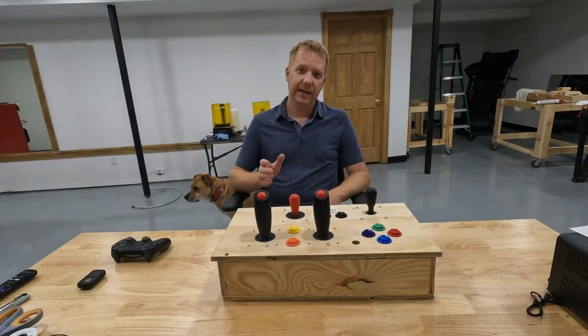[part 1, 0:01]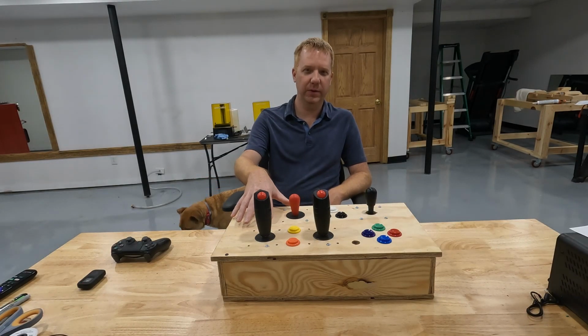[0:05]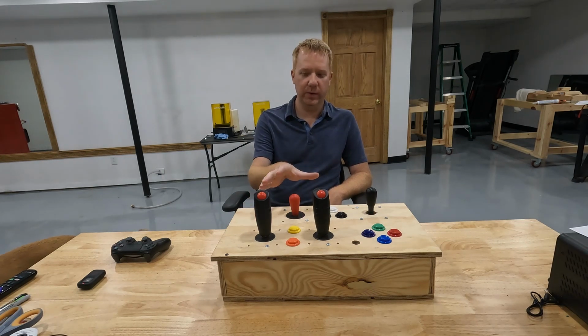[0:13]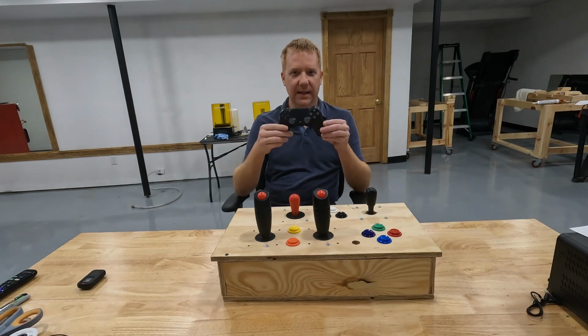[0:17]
Now in some of my other videos, I showed all of you how I built a PlayStation controller for my quadriplegic nephew. So what you see in front of me is what we built in those videos. It's a wooden box with joysticks and buttons on it, and it does the exact same thing as a DualShock PlayStation controller.
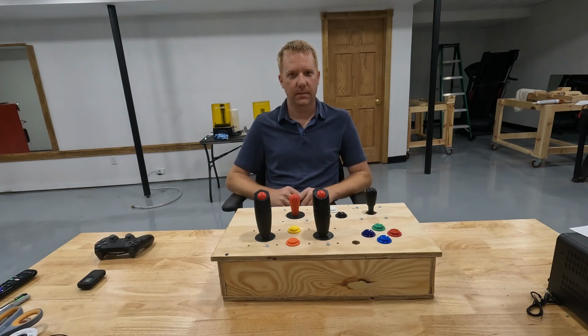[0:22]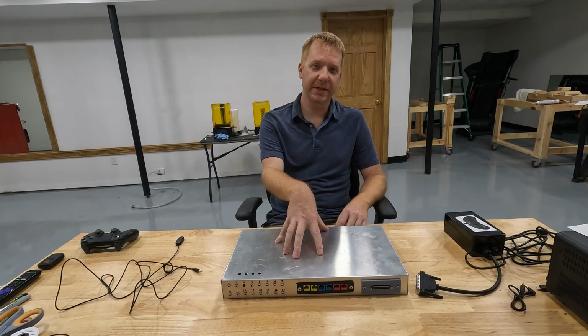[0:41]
Now in those videos, I had mentioned a few times that I was working on a completely different design that's more flexible, a little bit more modular than this controller. And I'm excited to show that to you today. So let me get it out and we'll see what it looks like. Right here is the new and improved modular controller that I've been working on.
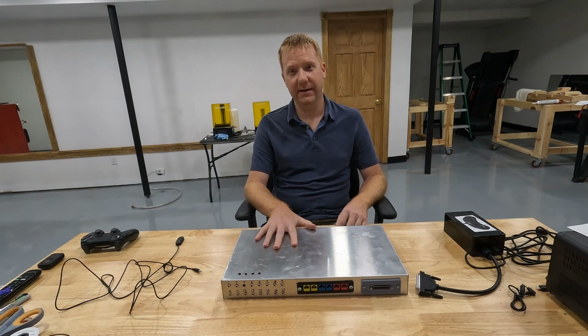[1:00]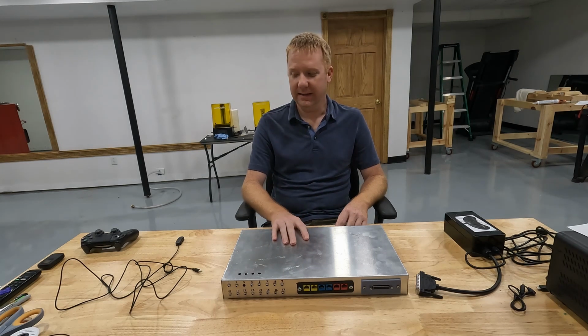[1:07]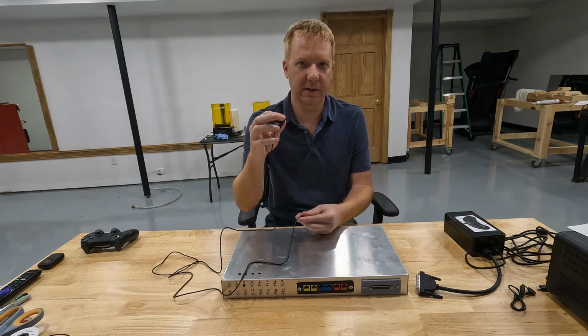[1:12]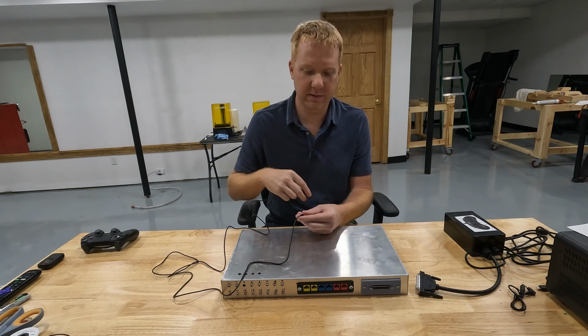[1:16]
So instead of having buttons and switches and joysticks permanently mounted to a box, what I've done is made the entire thing flexible so that we can plug in any kind of button or switch or joystick into this thing and use it as we need it. So for example, I have a simple switch here. This is just an on and off switch, similar to the arcade button that we used in our previous controller.
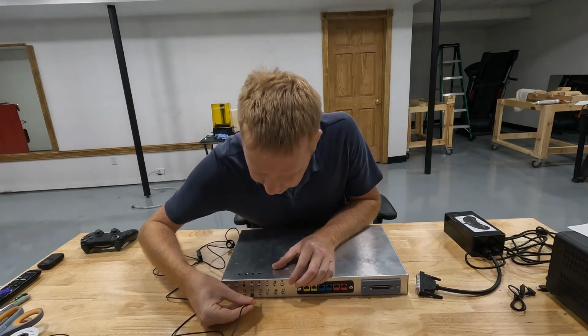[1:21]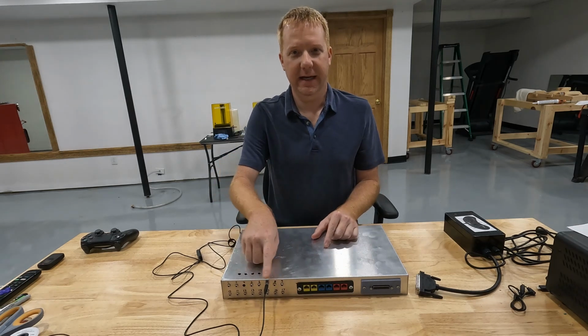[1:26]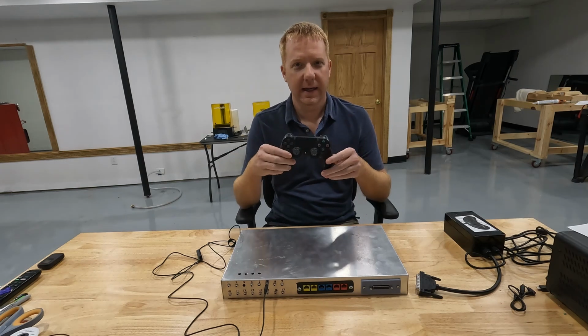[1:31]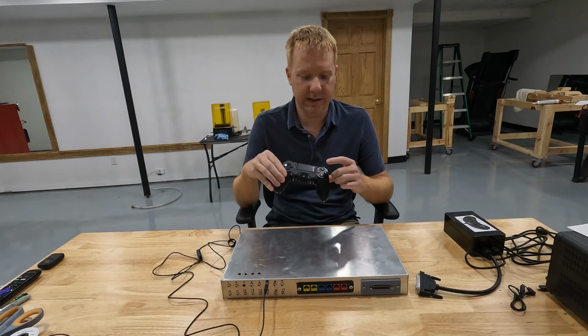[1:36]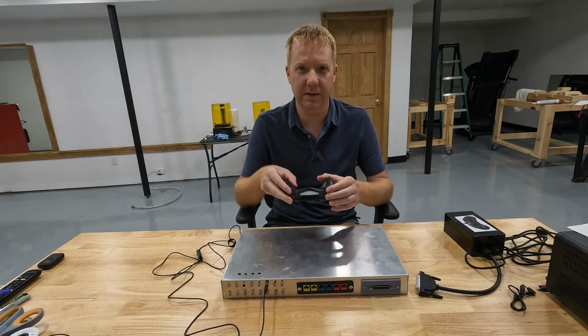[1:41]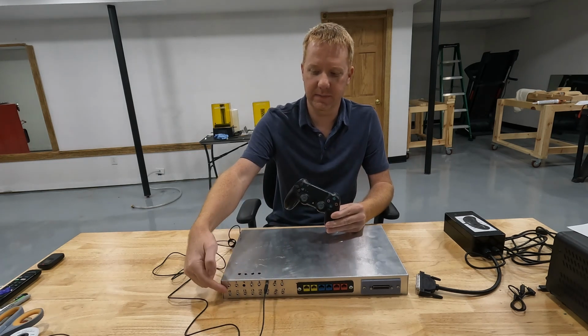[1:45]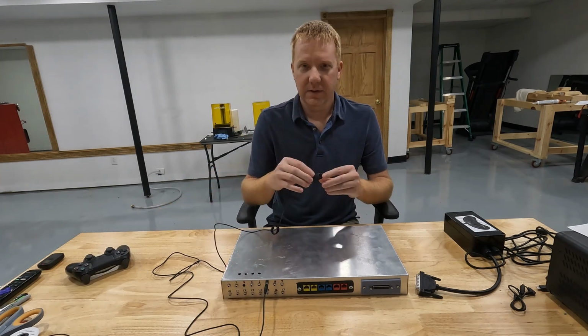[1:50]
And it's going to plug into one of these 3.5mm jacks. Now each one of these 3.5mm jacks corresponds to a button on a controller. So for example, it could be X, square, triangle, circle, or it may be the directional pad or the L1, L2, R2, R1 buttons. Anything on the controller, we have those as 3.5mm sockets. So I can use any type of switch to control any type of button.
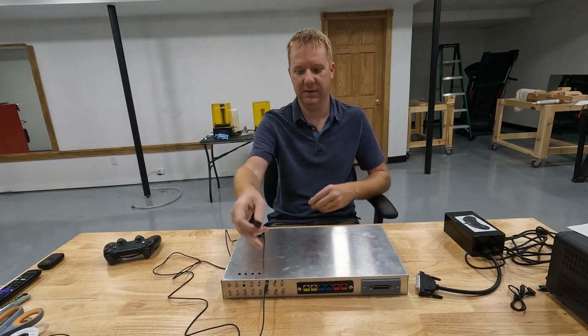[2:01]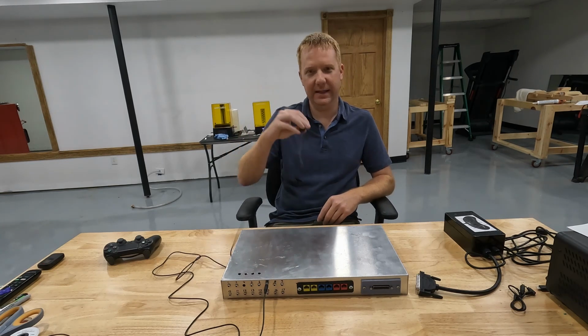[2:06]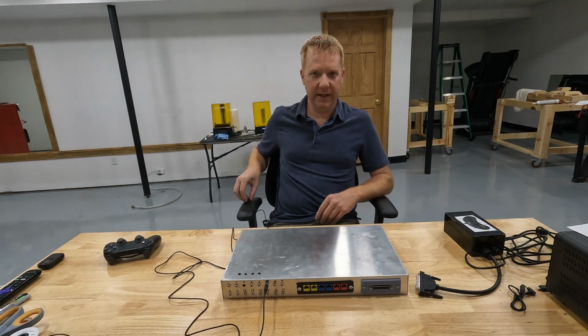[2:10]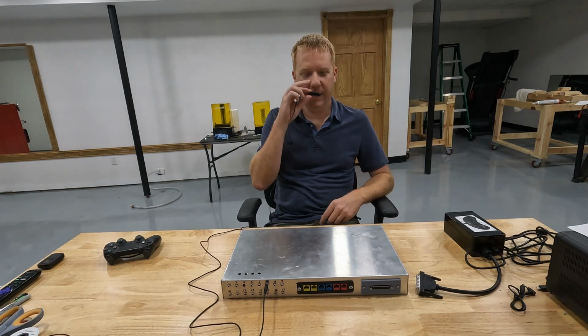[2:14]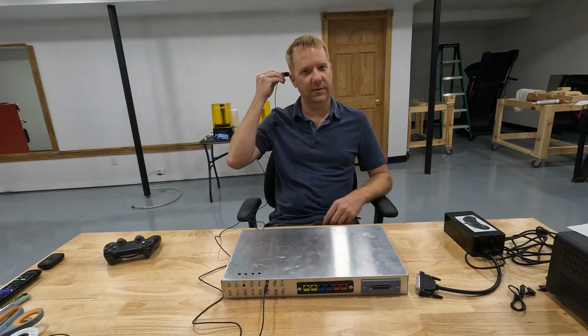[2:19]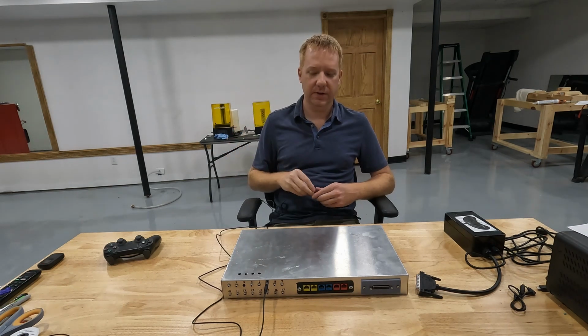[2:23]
So if I wanted to use this switch for the X button on a PlayStation controller, for example, then I can plug it into the X button jack and then I can mount it anywhere I want to. So I could have it mounted to my wheelchair armrest and maybe use my elbow to control it. I could put it in my mouth and bite on it if I wanted to, or maybe up by my head so I could use my head to activate this switch.
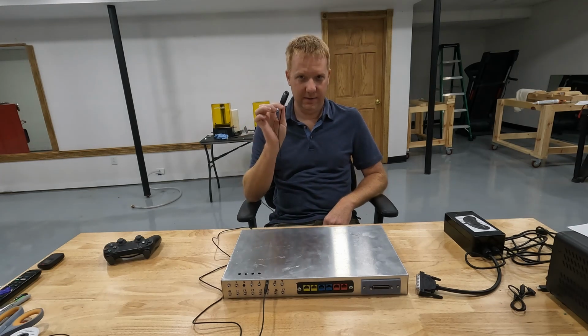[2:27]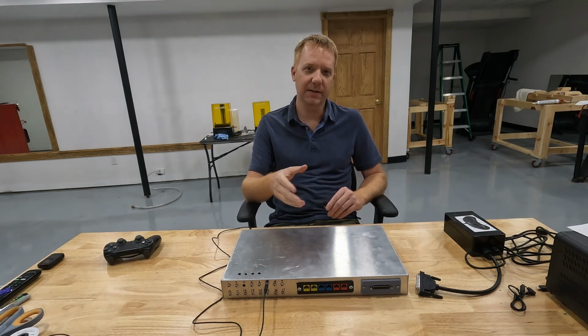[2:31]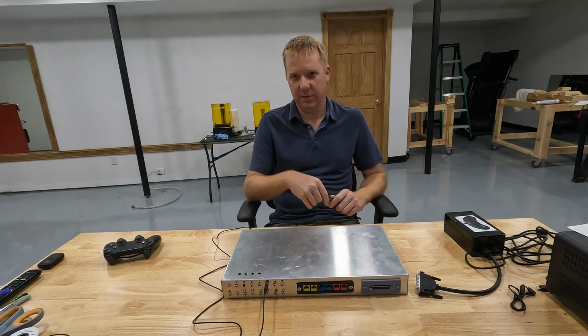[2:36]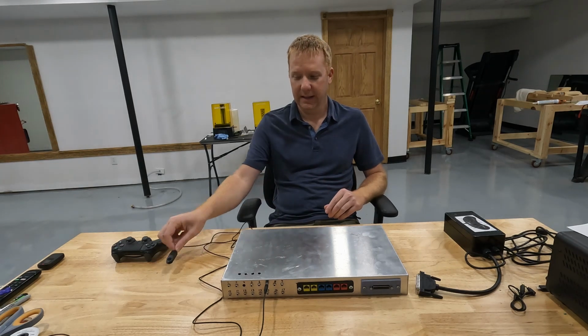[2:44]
Now, we're not only limited to joysticks and simple button switches like this. We could also use more complex things like a sip-puff device, or we could come up with our own types of switch. You're really only limited to your imagination, so you can expand this to whatever you want to suit your needs.
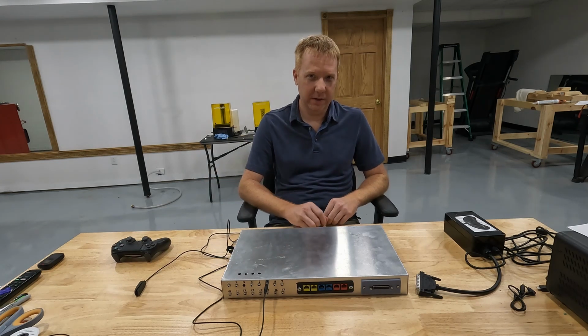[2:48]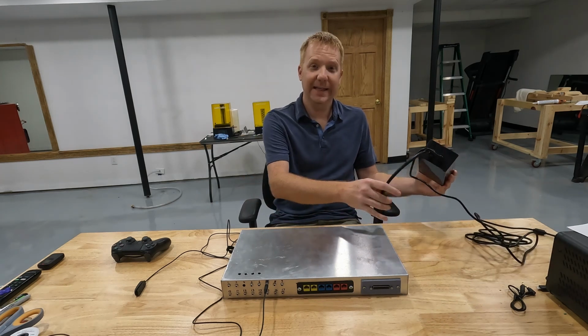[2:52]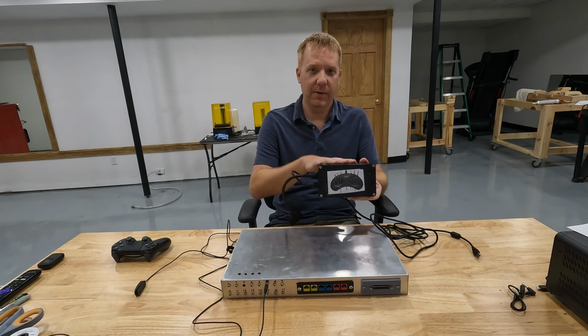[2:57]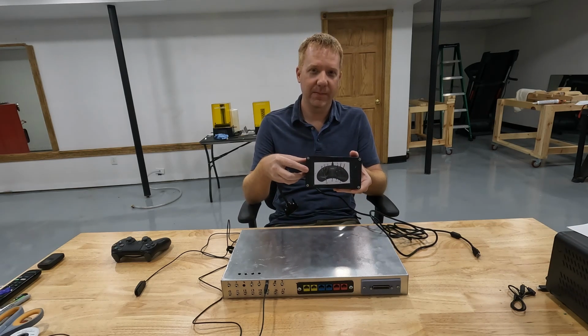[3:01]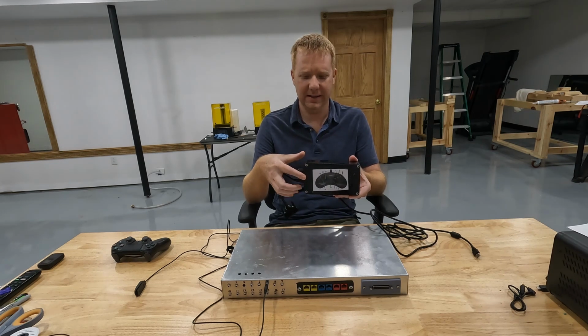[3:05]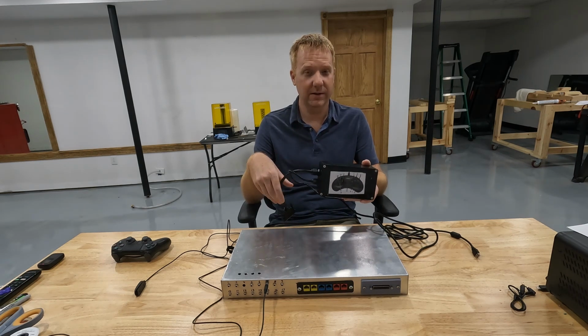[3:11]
Now, the other cool thing about this controller is I have made it to where we can use it with any system. So what I have done is I've created a module. And this module I built for the Sega Genesis Mini, or the Sega Genesis Classic Mini might be what it's called, but it's one of the mini systems. I know they made one for Super Nintendo and regular Nintendo. This is the Sega Genesis version.
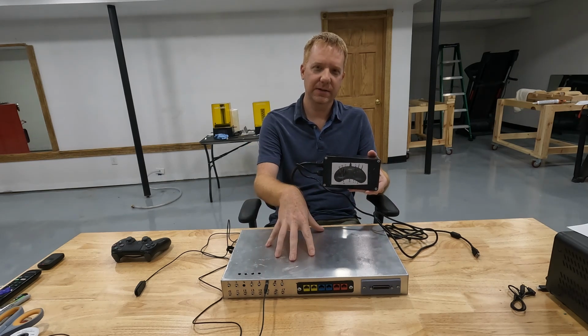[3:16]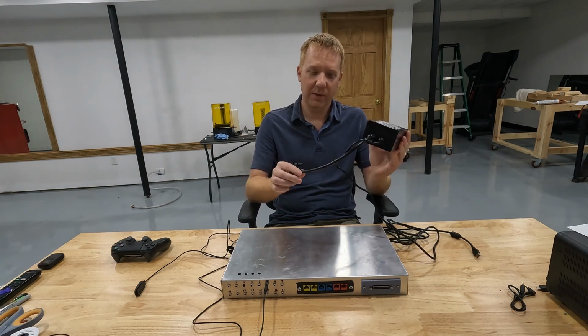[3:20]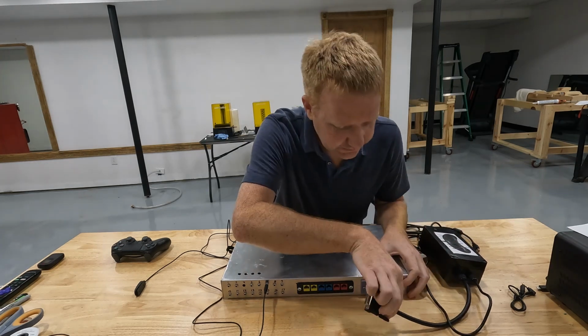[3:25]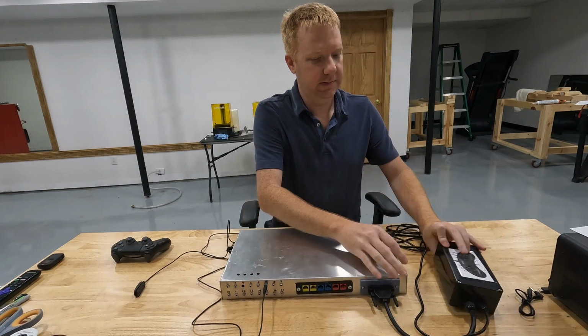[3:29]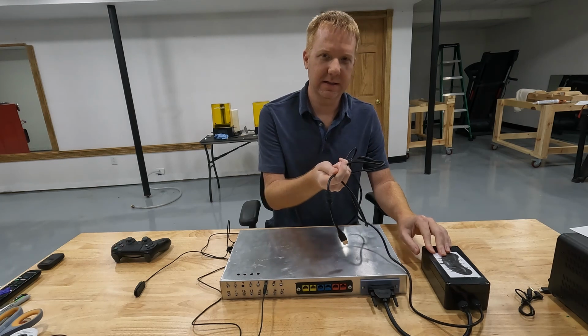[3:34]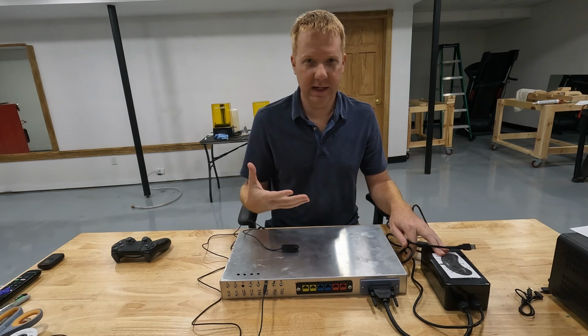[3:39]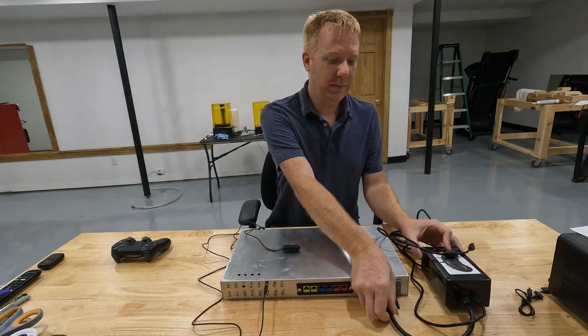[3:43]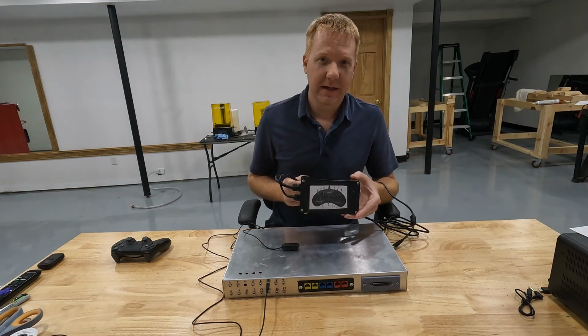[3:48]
So if I wanted to use this controller for a Sega Genesis Mini, for example, I can plug this module into this connector right here on my modular controller. So this would plug in like so, and then the other cable coming out of this module would plug into the Sega Genesis Mini, and then I can plug in my switches and joysticks however I need to use it, and use it on that Sega Genesis Mini. Now we can build modules for absolutely any gaming system out there.
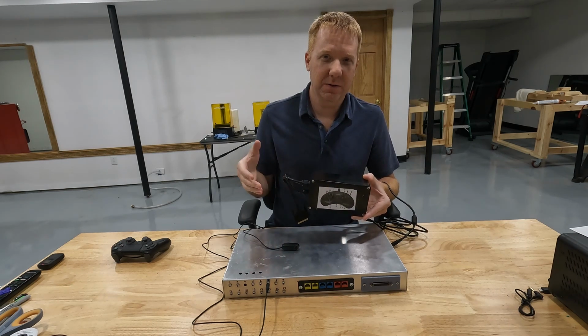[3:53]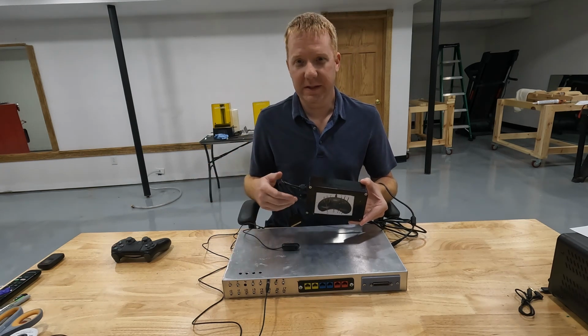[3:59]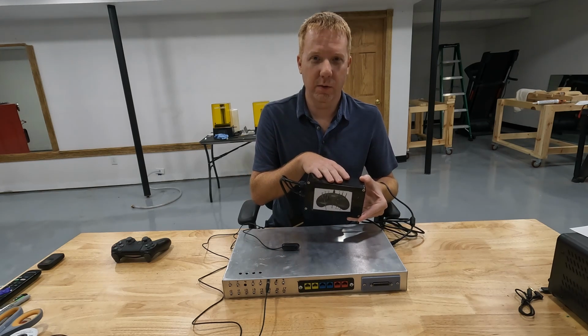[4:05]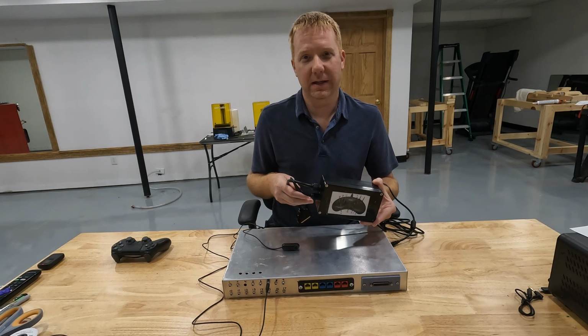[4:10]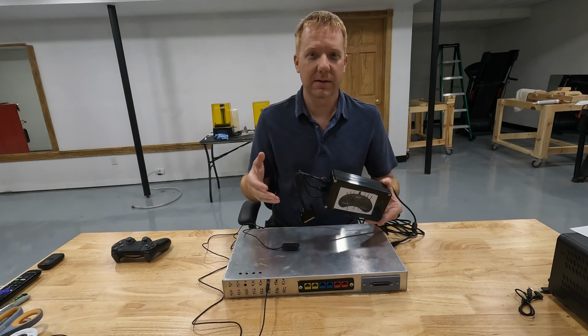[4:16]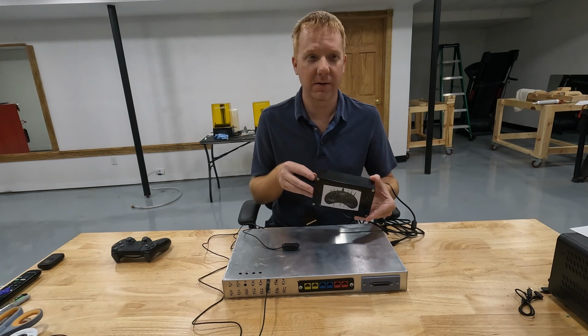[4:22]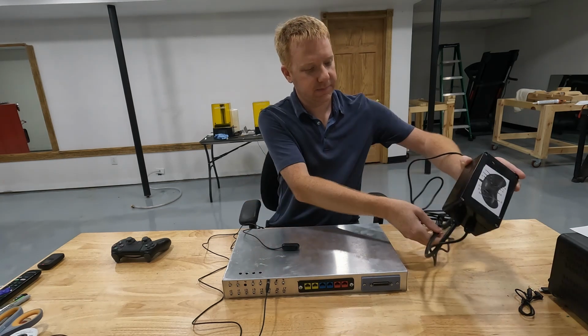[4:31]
In the previous wooden box controller that we made, I used the Brook wireless fighting board to connect to a PS4, a Nintendo Switch, or a PC. We can make a separate module using that Brook wireless fighting board and have the exact same capability that we had in the previous controller. And let's say we wanted to play one of the older systems. If you're like me and you grew up with Nintendo, you could make a module to connect to an original Nintendo, or Super Nintendo, or an N64, anything you want. We can build a module for that, plug it in, and then we can play on that system.
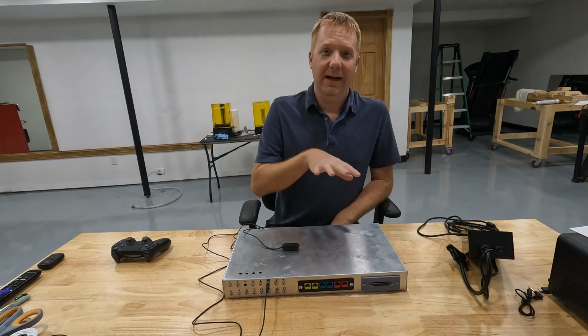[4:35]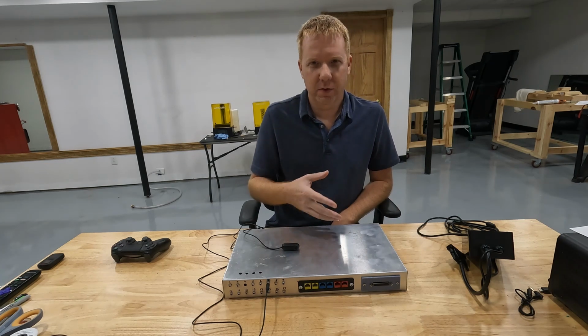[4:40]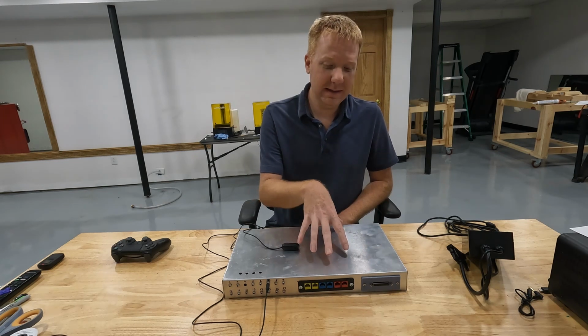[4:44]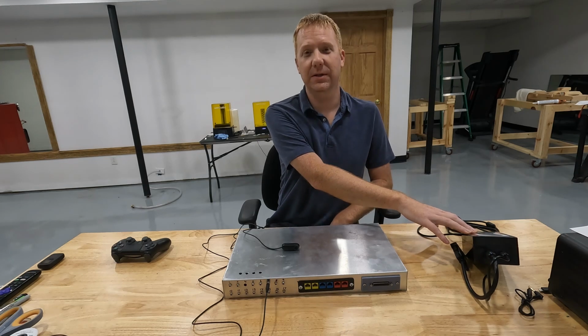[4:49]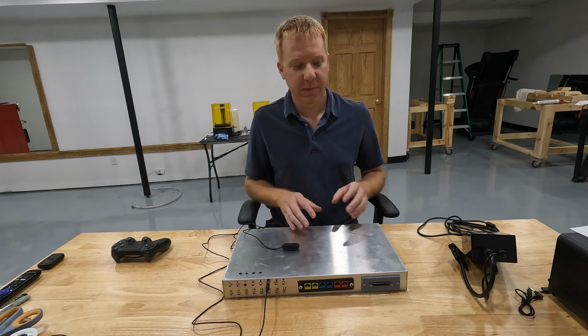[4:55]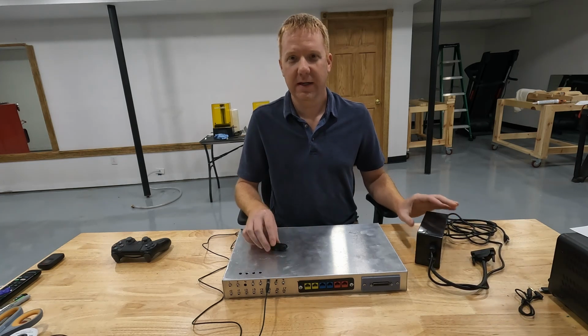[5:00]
But wait, there's more. I started with the gaming systems because that was readily available. It's been done before, so it was a lot easier to get started with the gaming systems. But we could make modules for things that have nothing to do with gaming. So we could use it for an RC car, for example, a remote control car or truck. If you wanted to get into that, we could make a module for a controller like that and then use our buttons and joysticks as necessary to control that. We could do the same thing with flying drones.
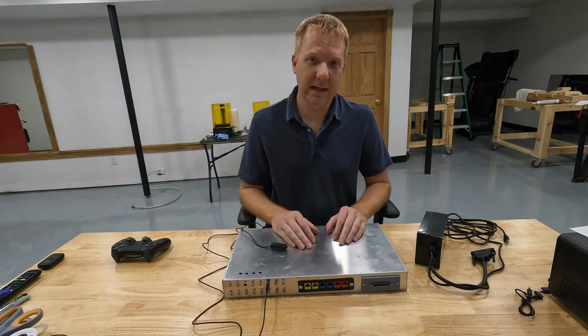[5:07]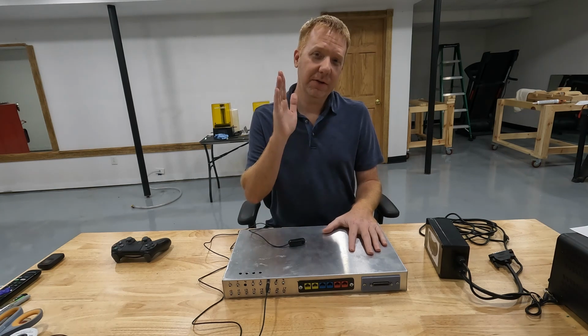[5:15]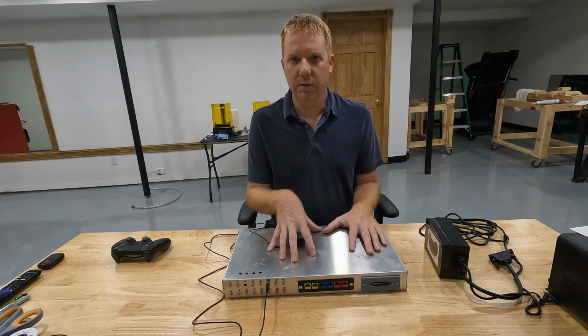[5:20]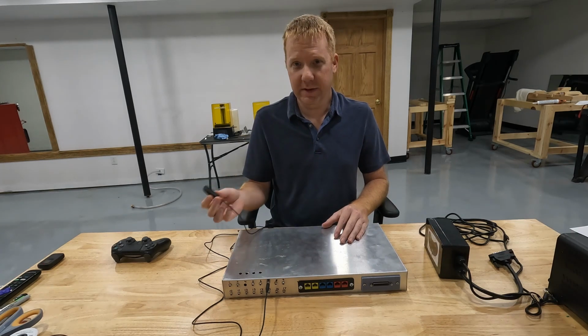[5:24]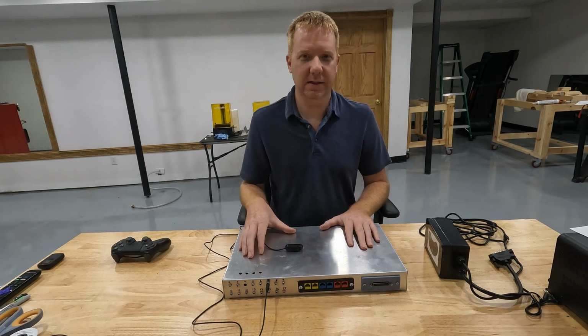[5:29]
We could hack into a drone controller and make a modular out of it, and then we can control drones with our own buttons and joysticks and stuff. So long-term vision, I want to use this like a universal remote, if you will. So the buttons and the joysticks that we use to control a PlayStation can also be used to control a multitude of other things. Now, this modular controller was inspired by the Microsoft Adaptive Controller.
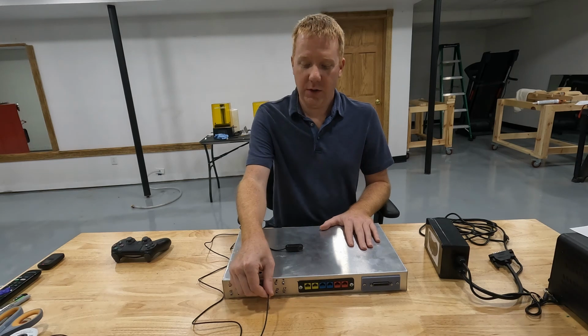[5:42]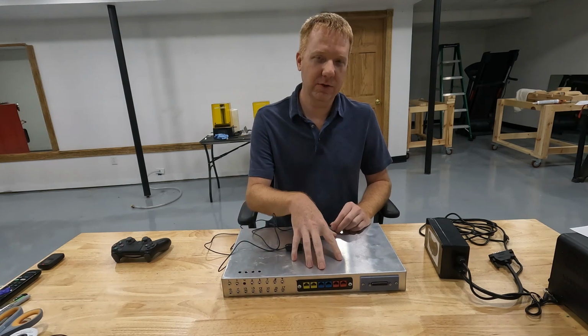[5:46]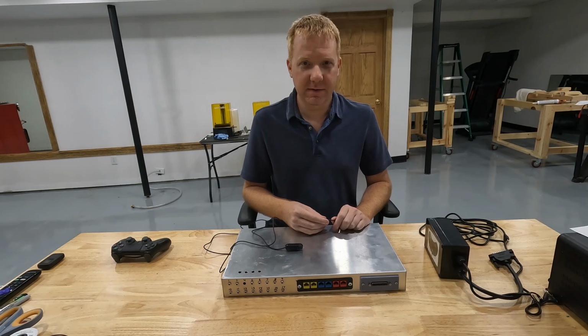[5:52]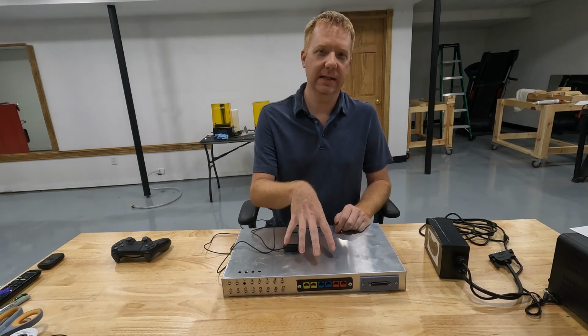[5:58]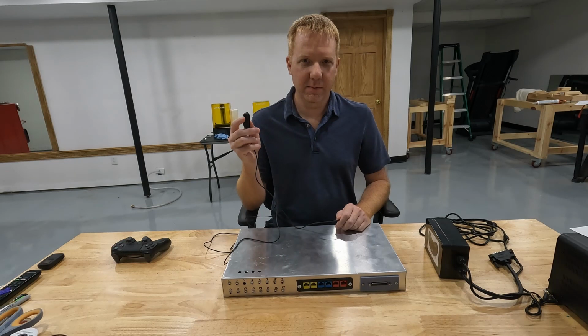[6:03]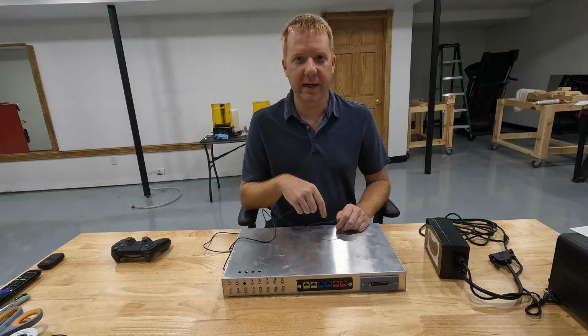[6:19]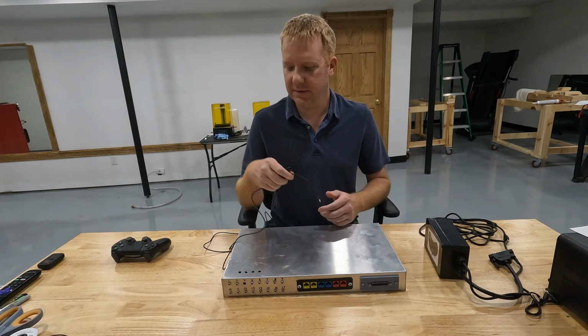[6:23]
If you're not familiar with the Microsoft Adaptive Controller, it also uses the 3.5mm jacks, and I made sure that anything that we plug into my controller will also work for the Microsoft Adaptive Controller. So for those of you who already have a Microsoft Adaptive Controller, you may not be interested in this box right now, but you might be interested in the buttons and switches that we build for this controller. That's one thing I'm going to start doing fairly soon, is start building my own buttons and switches that we can use in different locations. And whatever we make for this controller will also work for the Microsoft Adaptive Controller. So some of you might be interested in some of those devices.
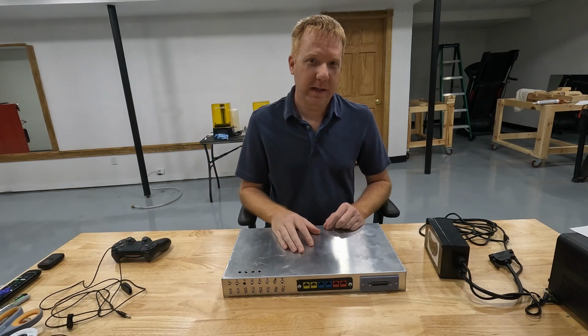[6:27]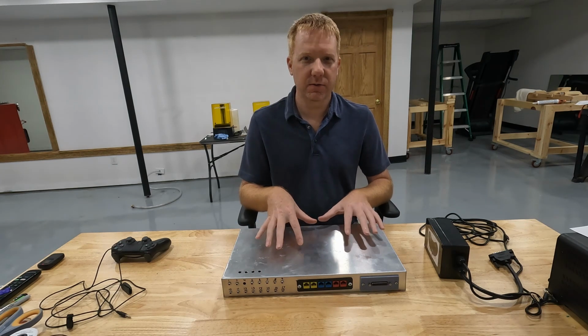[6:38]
So that's the plan. Now in this video, I'm going to walk you through exactly how I built this box, what's inside of it. This probably isn't going to be the final design. This was a proof of concept prototype. I've got some bugs to work out on this, but we're going to start building more modules. We'll start testing this guy, and then we'll start tweaking it and making it useful for different things that we need to use it for.
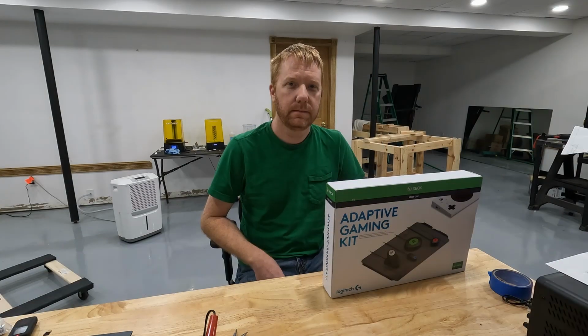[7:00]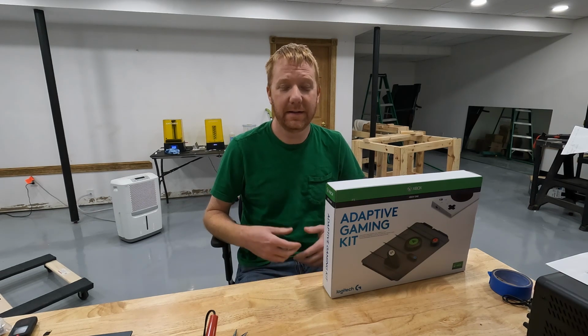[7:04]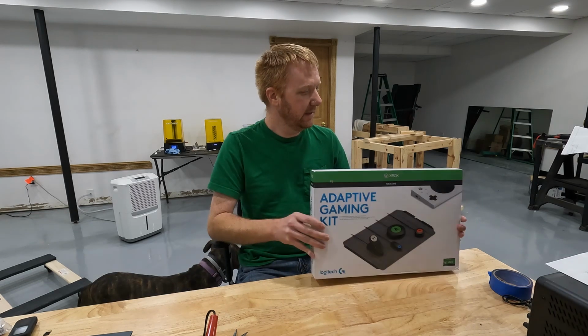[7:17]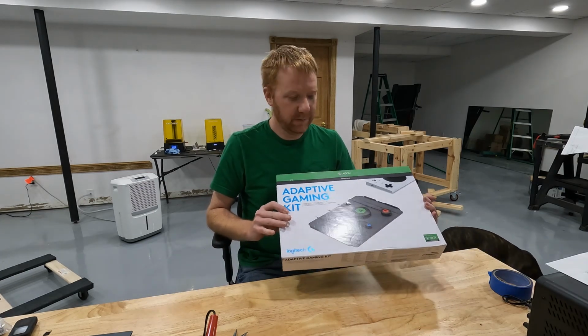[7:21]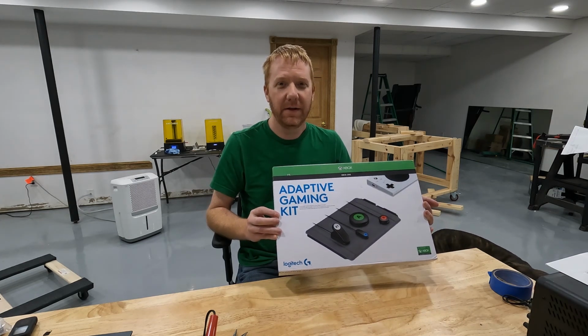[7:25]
Let's take a minute to talk about the buttons and switches and all the stuff that we're going to plug into this modular controller. How does it work? How do we interface with it? Where do we get them? Logitech makes a kit, I can't remember, what's it called? Adaptive Gaming Kit for the Microsoft Adaptive Controller.
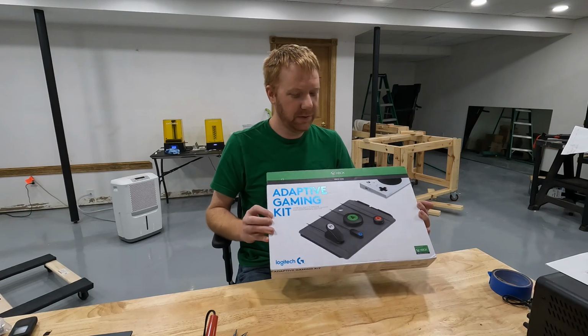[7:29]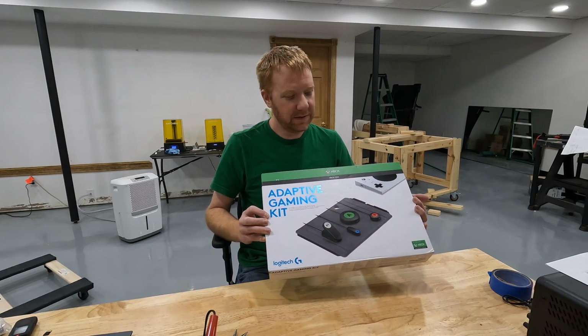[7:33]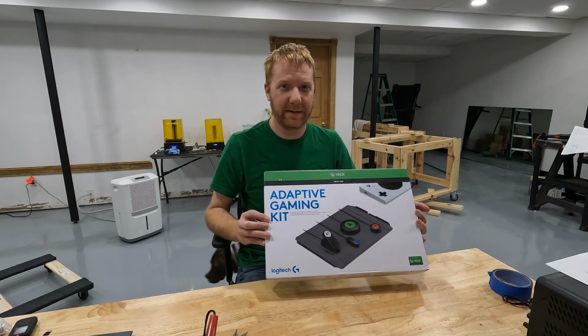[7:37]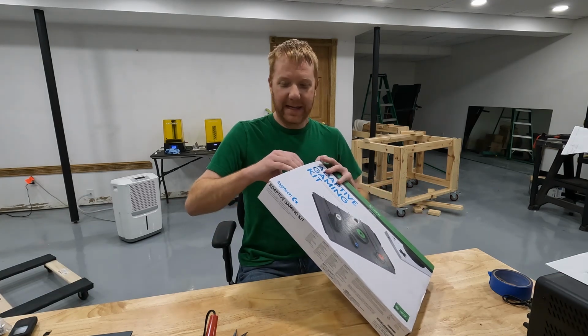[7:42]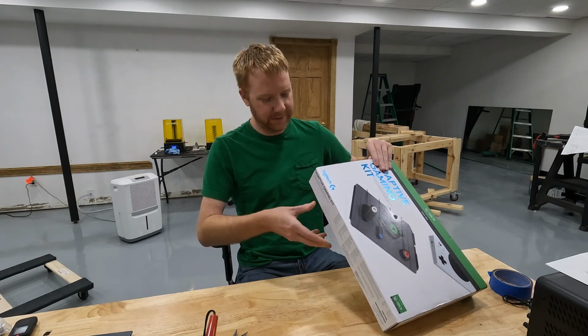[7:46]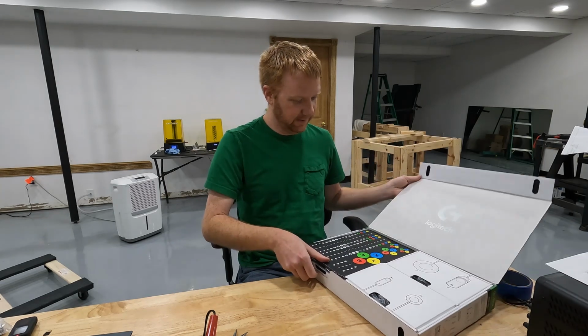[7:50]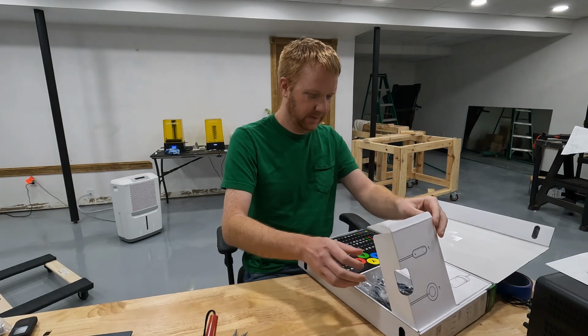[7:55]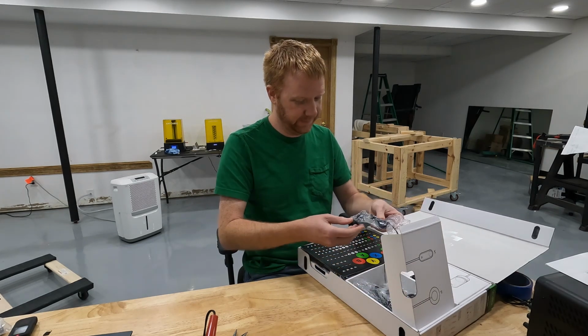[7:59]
And I bought a used one off of eBay for about $60. Now if you bought this new, it's right at $100, or it is as of the time of me making this video. Who knows with supply and demand issues and COVID and whatnot if that's changed, but it's about $100 right now. And I've not really opened this to see if it even has anything in it. I hope I didn't get taken advantage of by the people at eBay.
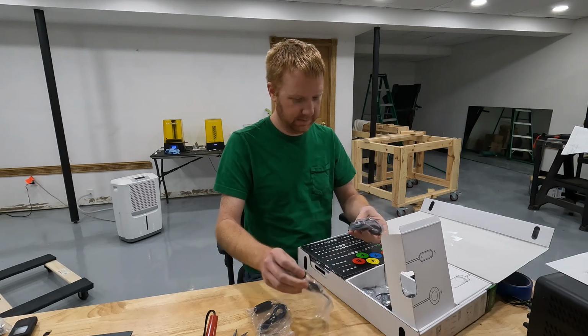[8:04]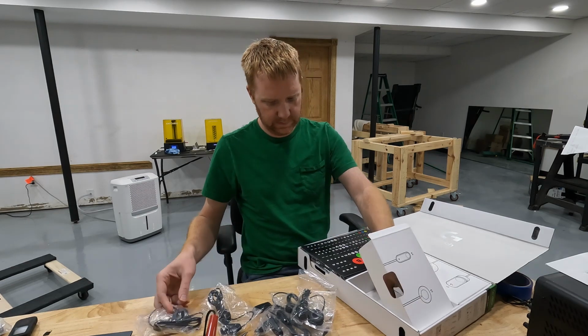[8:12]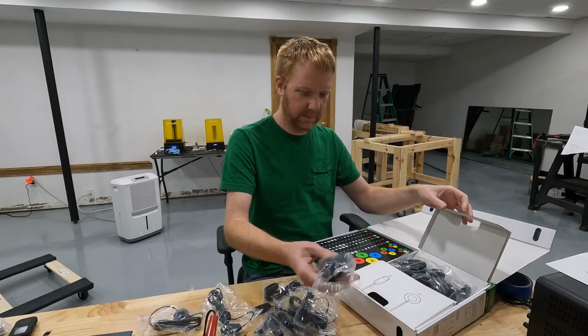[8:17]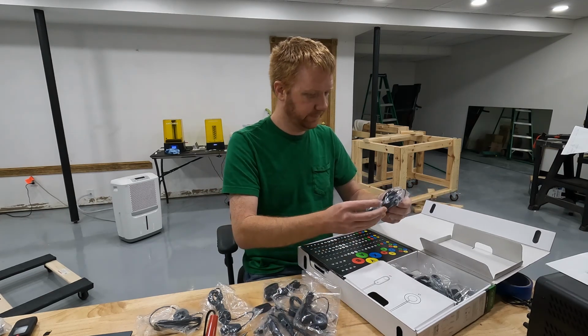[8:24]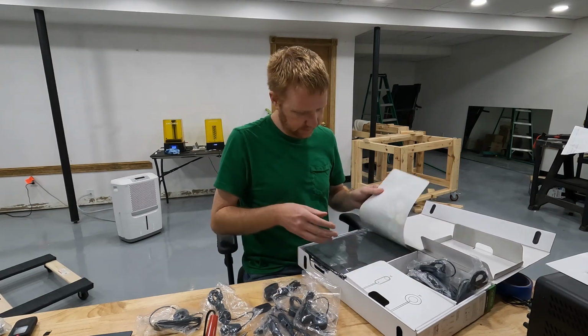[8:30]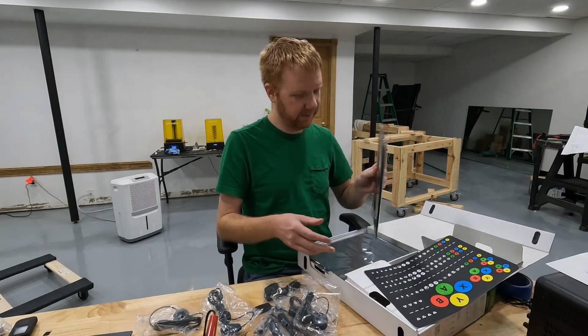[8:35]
It looks like there's all kinds of different switches in here, which is cool. There's more in here than I thought there would be. The question is, does it work? Okay, well that's cool. It looks like I got a sticker pad. I can pull those stickers off and label stuff. Ooh, this is nice.
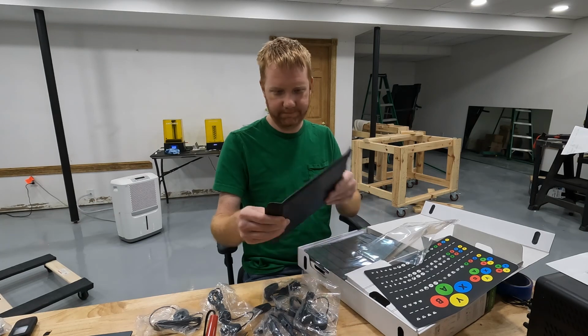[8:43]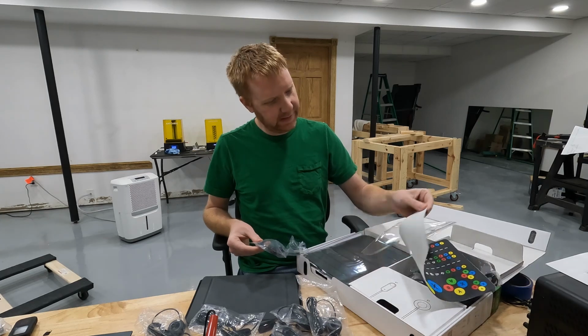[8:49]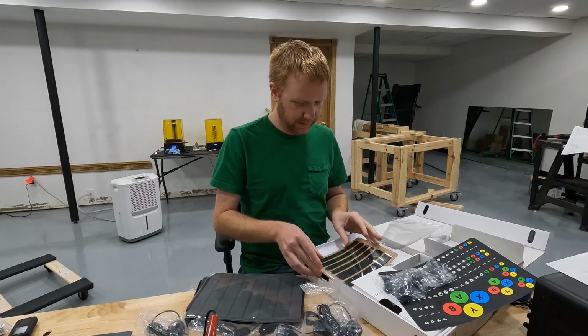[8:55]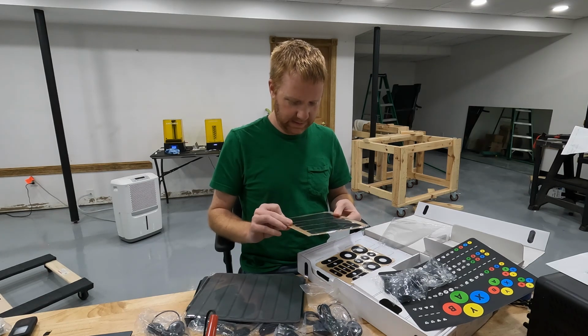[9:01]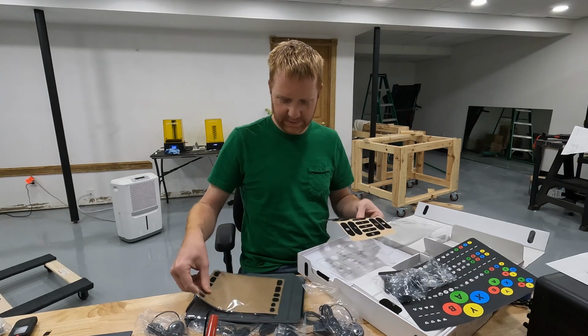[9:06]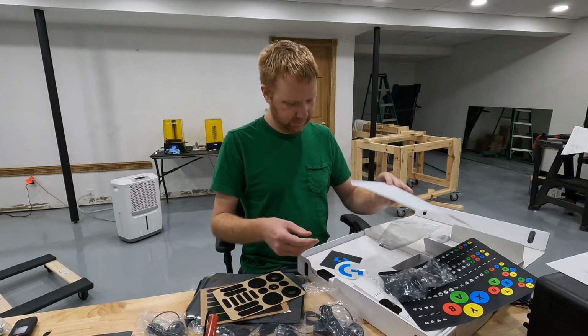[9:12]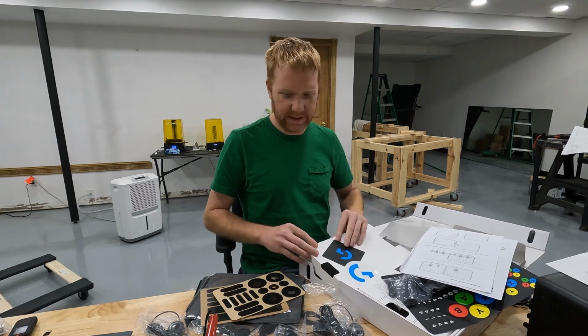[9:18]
I think this is a pad maybe that these buttons stick to, like a Velcro pad of some kind. I don't know, there's multiple ones in here. Yep, here we go. So here's some Velcro strips that come with it, so I can, I guess, cut those up and stick them to my buttons, and then they'll stick on this pad. Well, that's nice. Instructions, decals. Don't know what that is. Yeah, so this is one option.
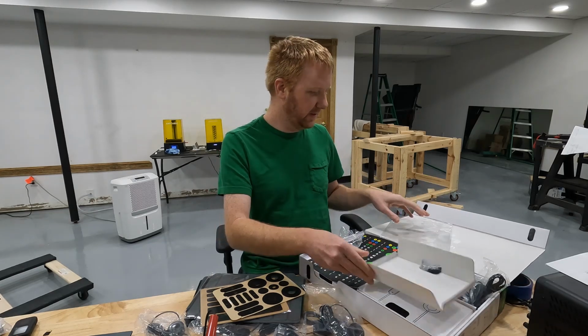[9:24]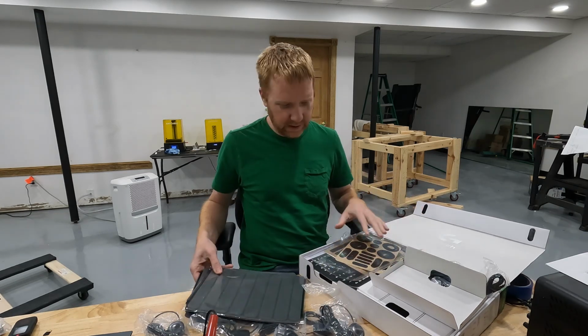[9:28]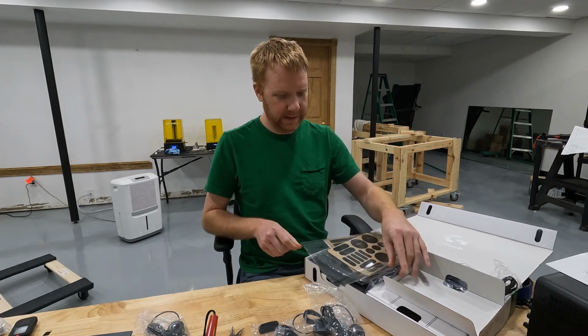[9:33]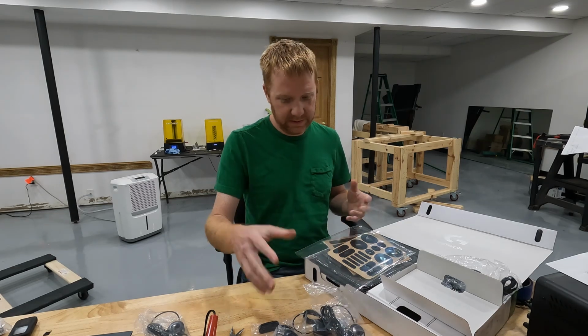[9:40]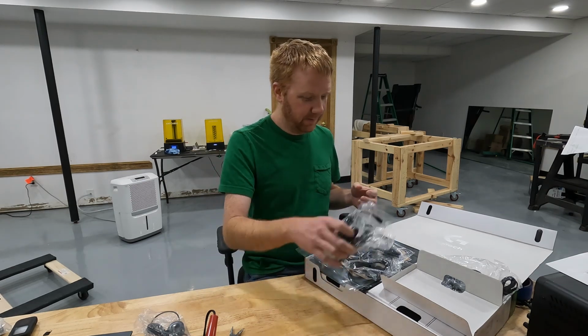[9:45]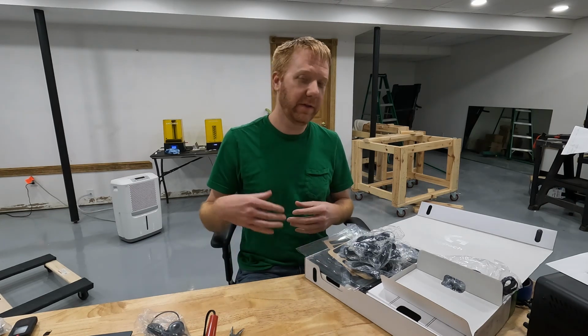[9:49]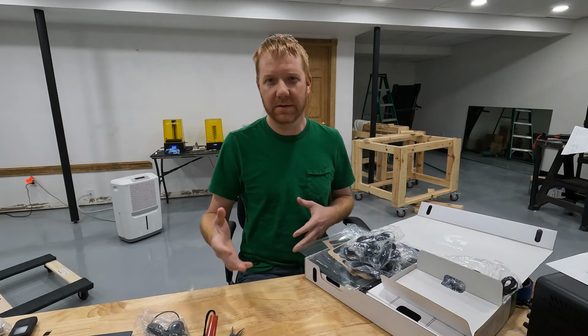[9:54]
You can purchase this kit, and it should work with the Microsoft controller, obviously. And I also want it to work with my controller. So this is what I'm going to start with when I get the controller working. I'm just going to use some of these Logitech switches to test it. And then once I confirm that all my stuff works with my controller, then I'll get a little more adventurous and start making my own buttons and switches and joysticks and whatever we need.
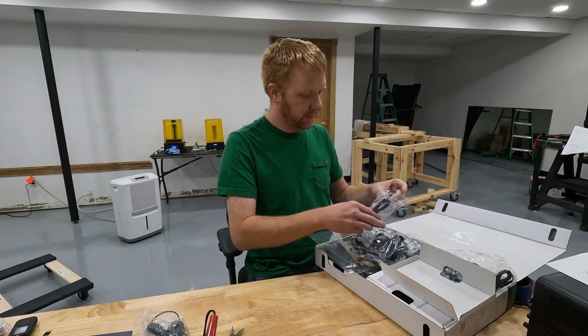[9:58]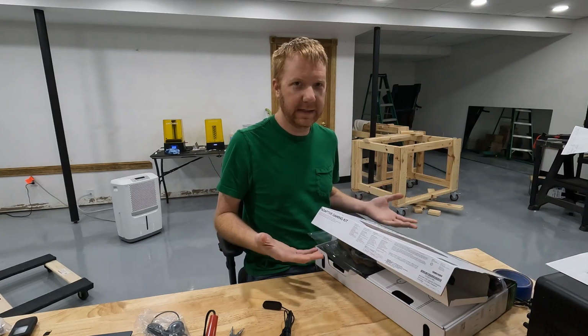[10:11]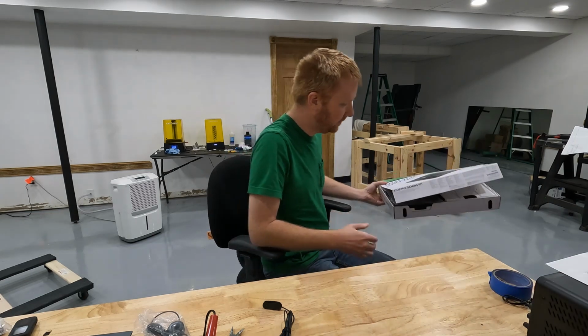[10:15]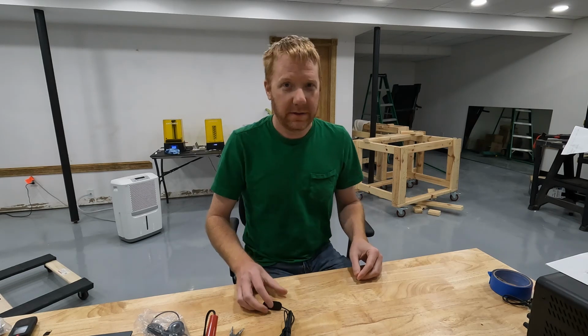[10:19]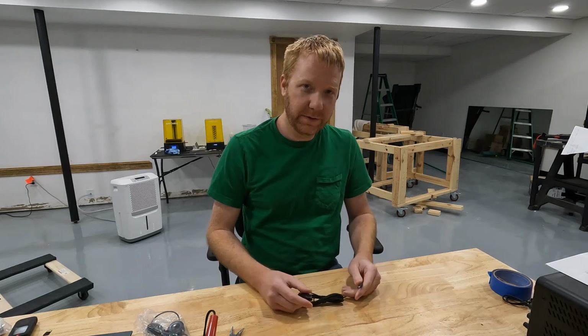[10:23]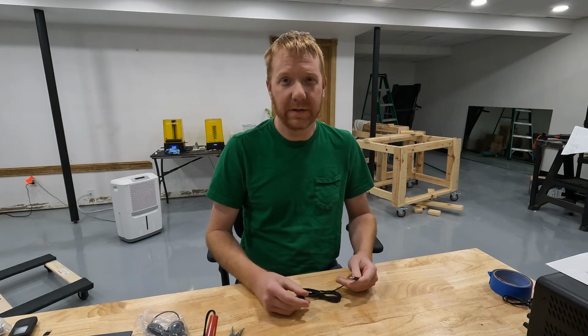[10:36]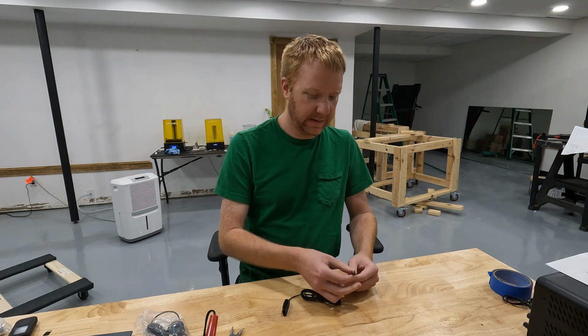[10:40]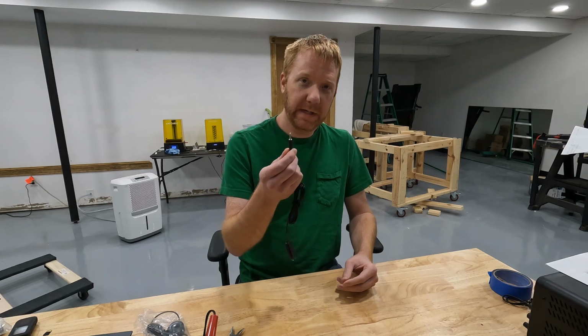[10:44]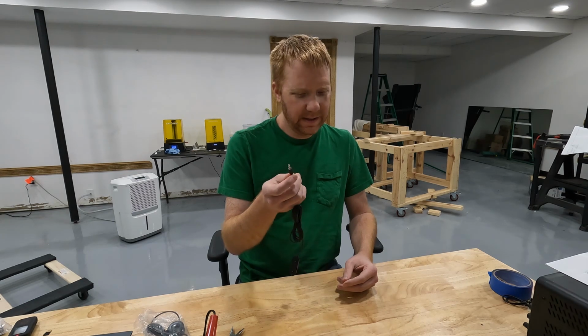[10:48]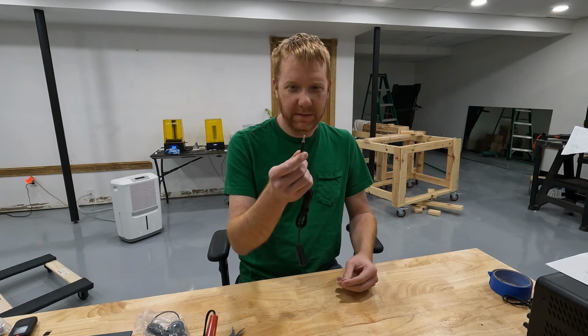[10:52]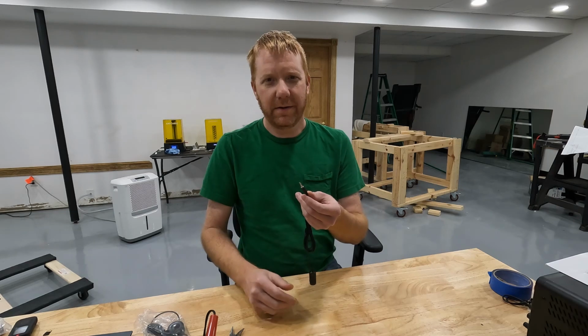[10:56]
But I did want to show you how it works. And again, I don't have the Microsoft controller, so there's nothing that I can really test it on, unfortunately, but I did do some research. Adafruit has got a pretty all-inclusive rundown of how the Microsoft Adaptive Controller works, and they sell some DIY buttons that you can make yourself and use with that controller. And they go through great detail on the 3.5mm audio connections that they use. But after looking at this, mine is a little bit different than what Adafruit has on their website. And I honestly don't know if it even makes a difference.
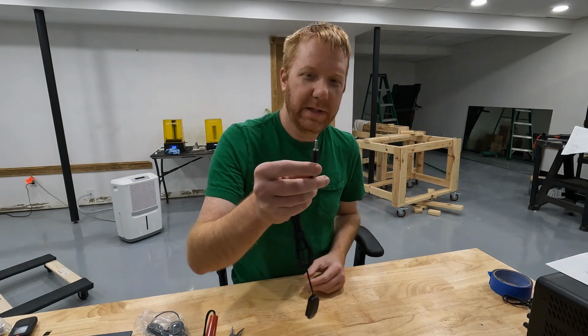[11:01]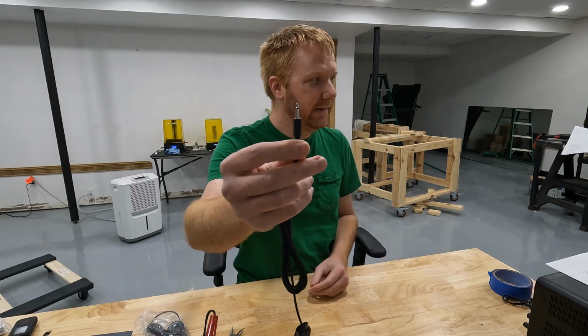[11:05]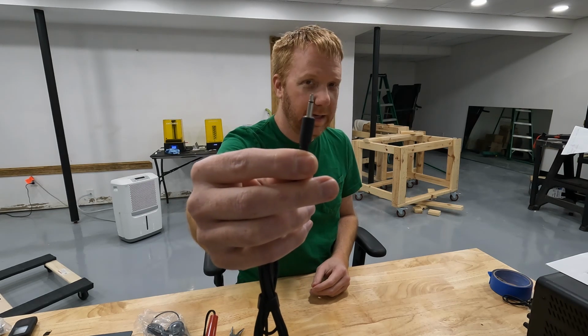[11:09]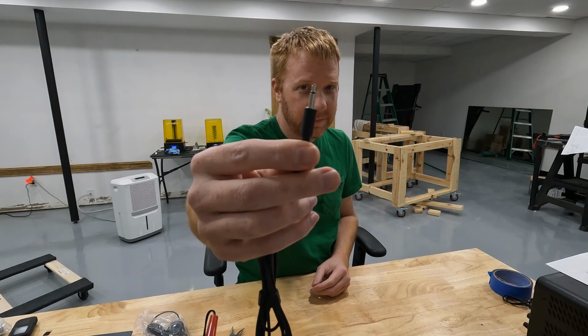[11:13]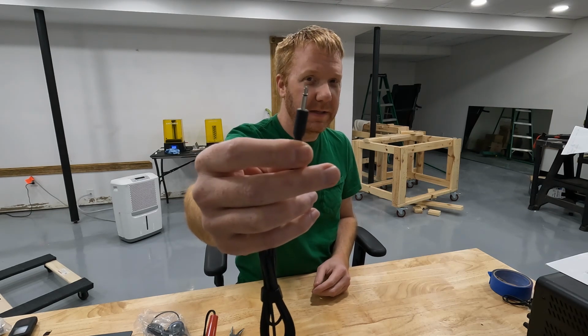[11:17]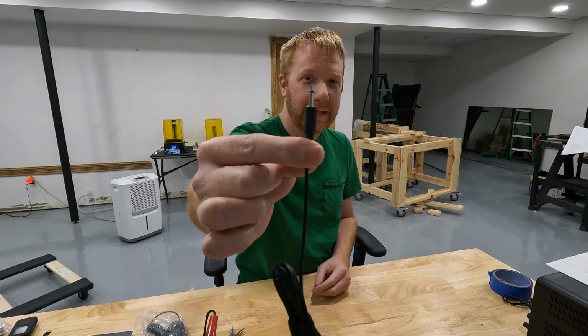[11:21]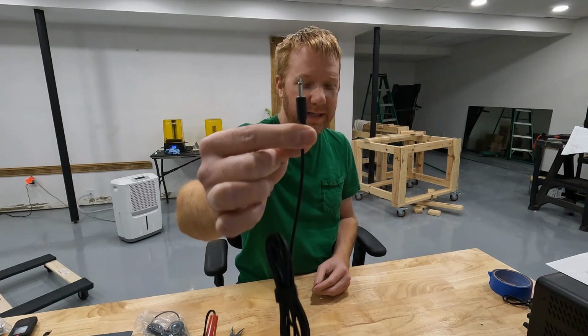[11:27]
So a 3.5mm jack is this right here. And it's what you would see on a pair of headphones or a microphone if you plug a microphone into your computer, that sort of thing. That's the exact same thing. Now this one that I hold in my hand is what would be considered a mono plug because there's only 2 contacts on it.
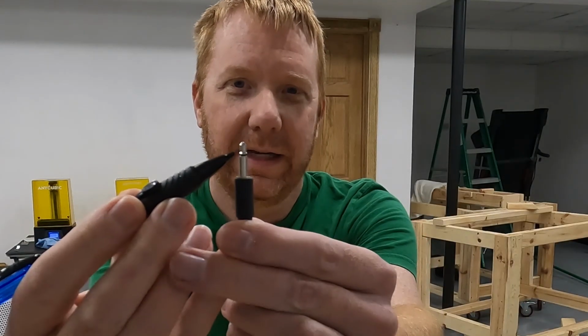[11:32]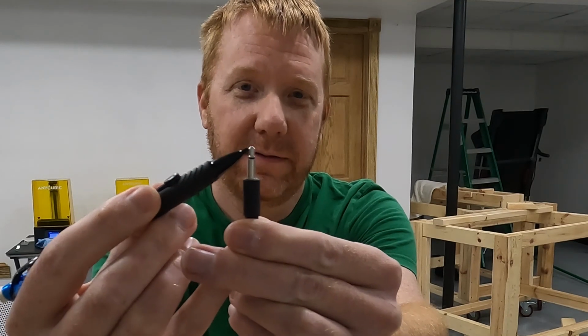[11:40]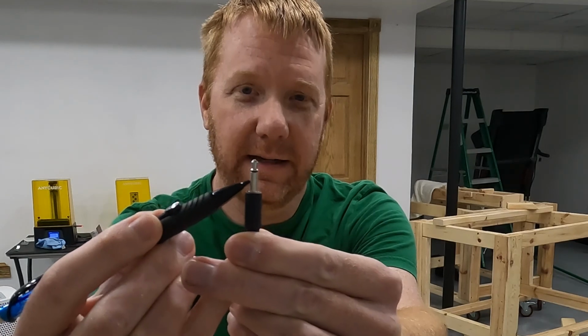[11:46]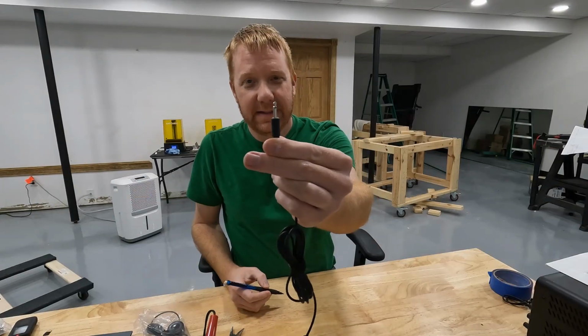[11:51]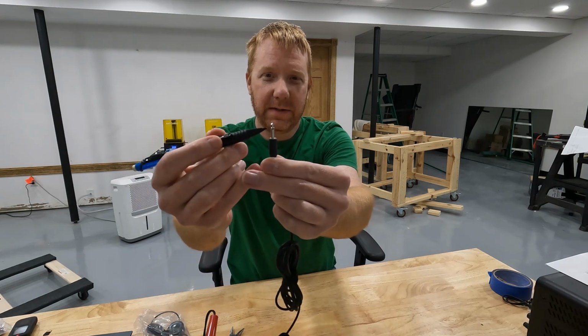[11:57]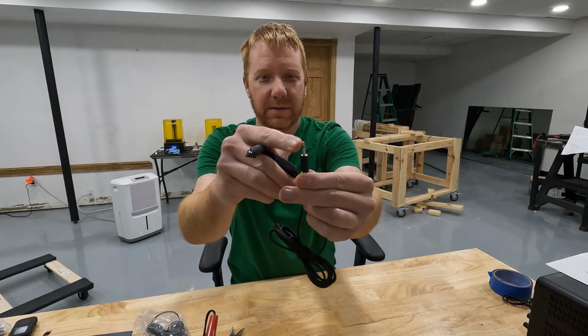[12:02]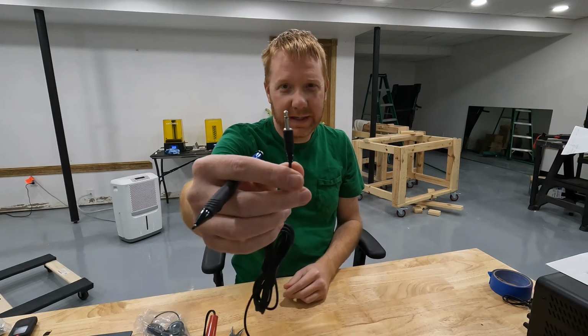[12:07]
And you can tell that by this ring right here. This ring is like an insulator or a separator between the 2 contacts. Everything above the ring is 1 contact, and everything below the ring is a second contact. So this is a 2-contact switch. This makes sense. This is what I would expect the switches to be because we only need 2 contacts, 1 for signal and 1 for ground. And then when you push the switch, it connects those 2 together. So a mono plug like this one makes absolute sense.
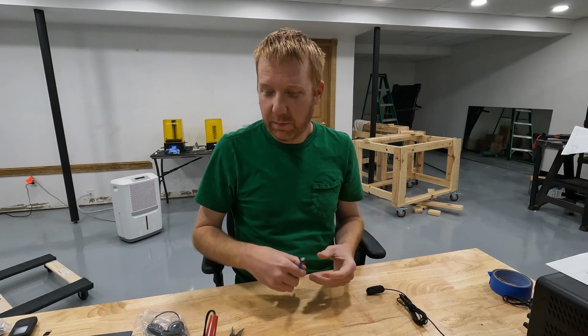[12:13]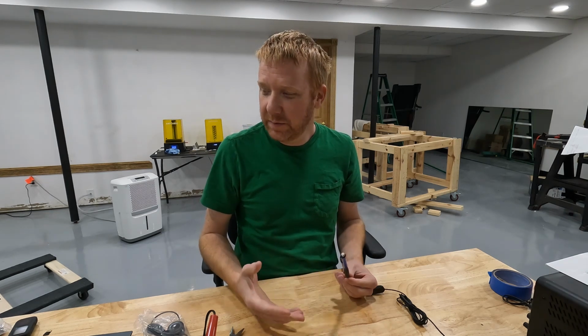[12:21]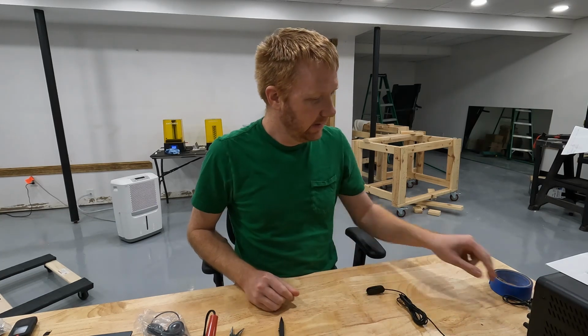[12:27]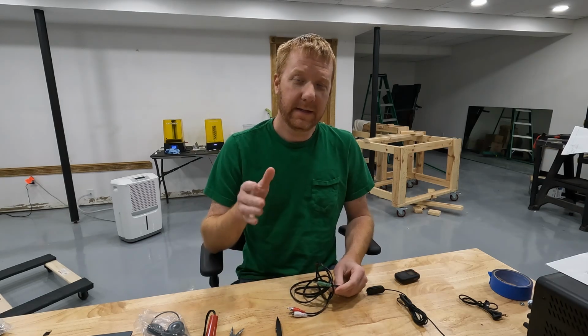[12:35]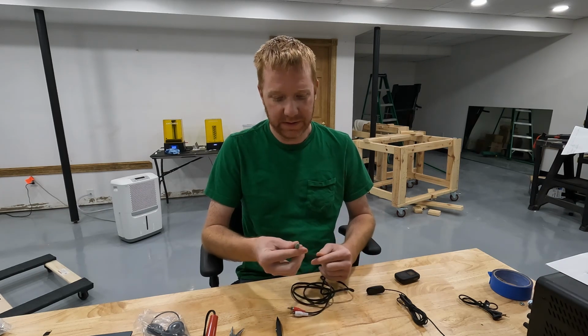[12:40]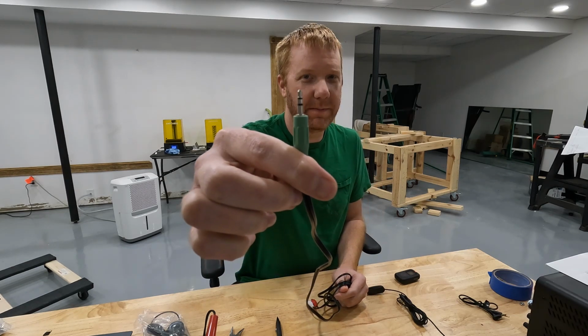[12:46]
The other kind, the one that you're more typically used to seeing, the kind that you probably use more often that would be on a set of headphones, has 3 contacts on it. And I have not got one of those here. Let me see if I can find an example of that. The kind of plug that you're more used to seeing is probably from headphones, and that plug looks like this. So it looks almost identical to the mono one, or what I call the mono one.
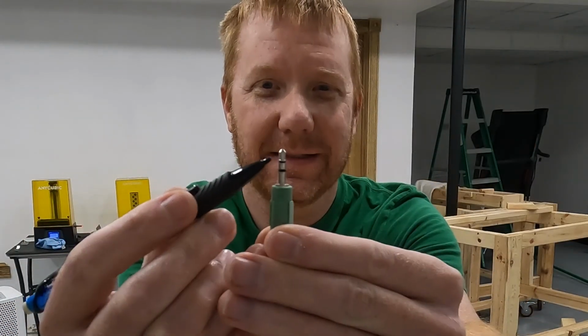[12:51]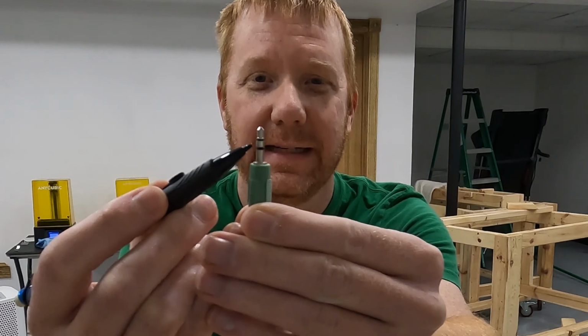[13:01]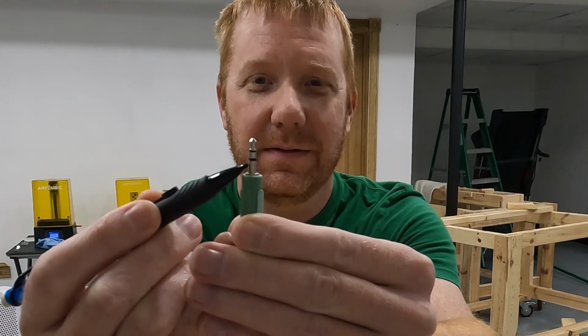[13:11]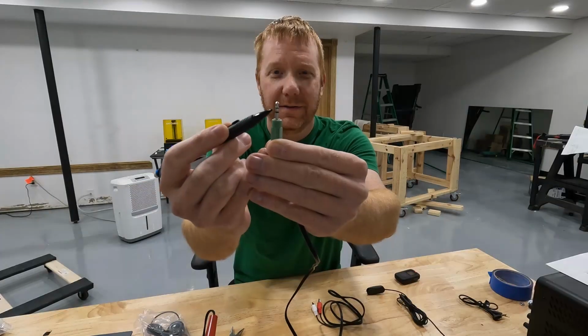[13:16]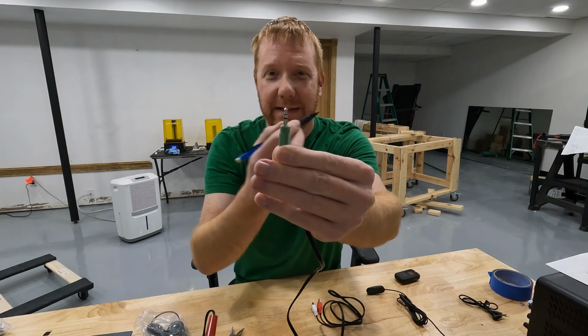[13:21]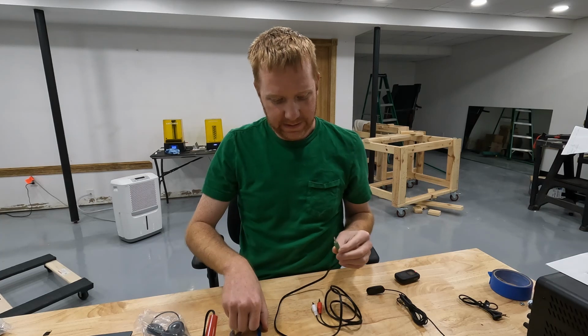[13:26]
This one has 2 insulating rings on it and 3 contacts. So you've got a contact at the top, and then you've got an insulating ring separating it from the second contact. This middle silver section right here is the second contact, and then you've got a second insulating ring separating that. And then this third silver section down at the bottom is a third contact. So on your headphones, you've got left ear, right ear, and then you have ground. That's why there's 3.
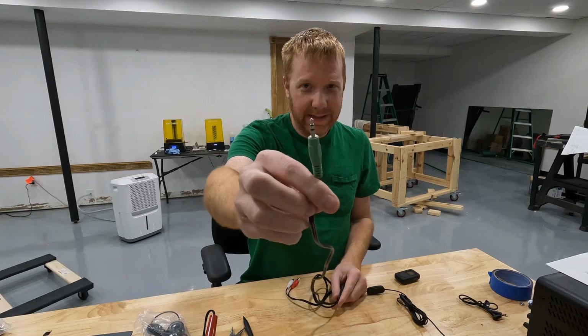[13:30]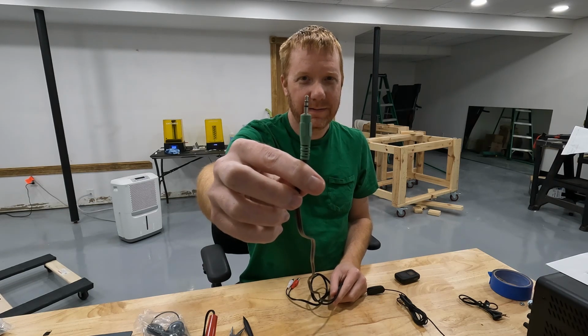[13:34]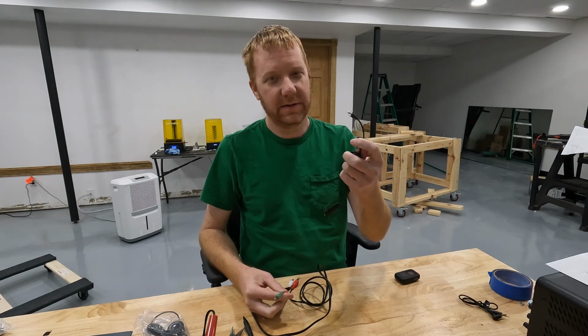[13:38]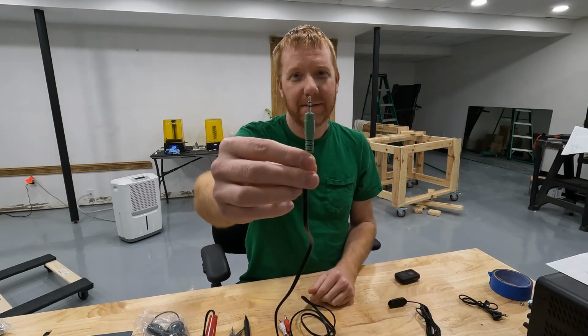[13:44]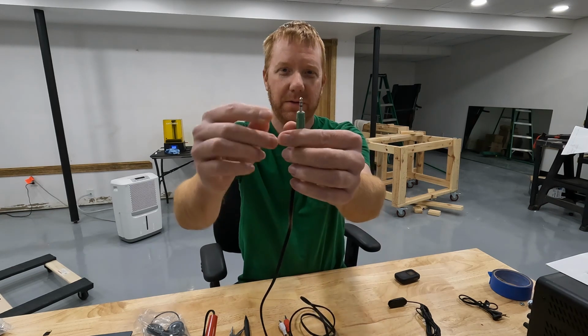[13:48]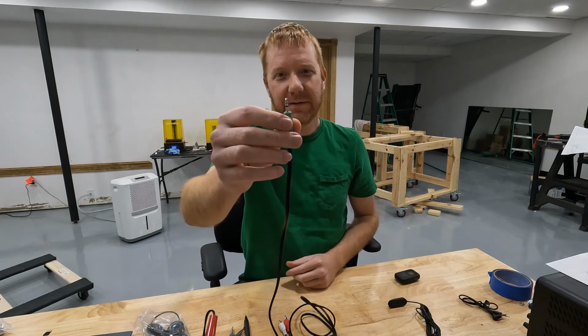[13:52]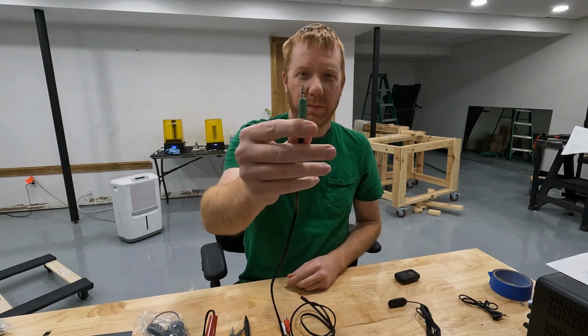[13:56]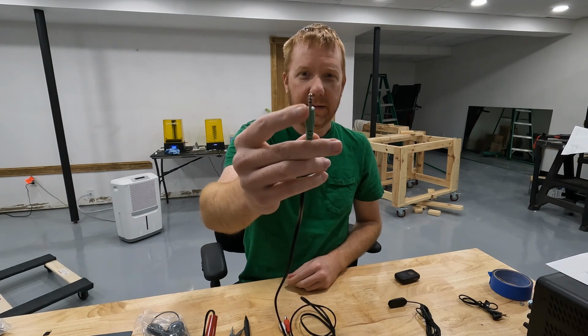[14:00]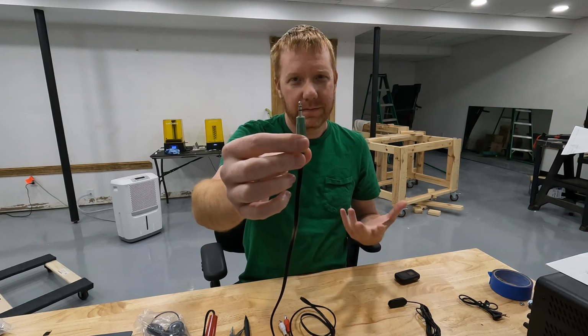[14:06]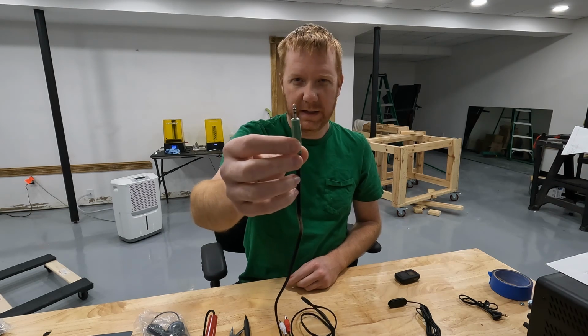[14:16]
This is the one that Adafruit has in their layout. And so I kind of thought that the Logitech signals would look like this instead of the mono one. Now you could still use this for what we're trying to do. You just wouldn't use one of the contacts. You're only using 2 out of the 3. And that's okay. I'm curious if you can plug a plug like this one into a mono socket and it still works the same way. I'd be willing to bet that it does. I imagine that you can interchange them. So I'm going to try that later and see what the difference is.
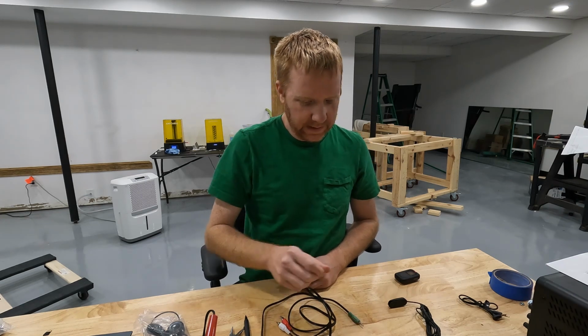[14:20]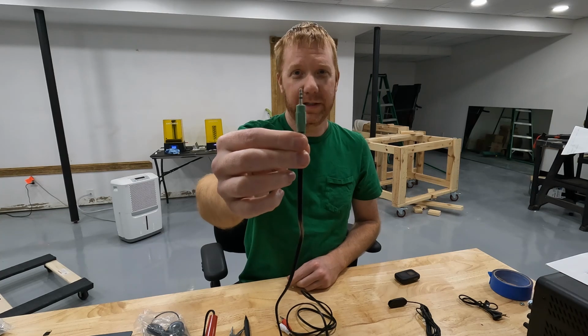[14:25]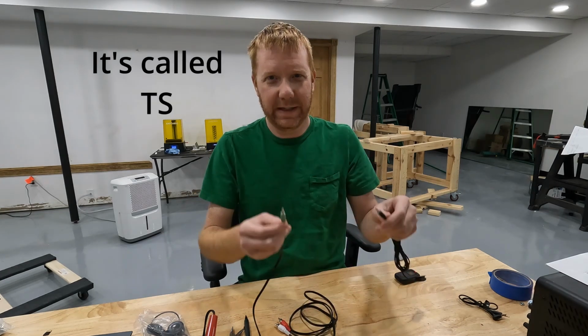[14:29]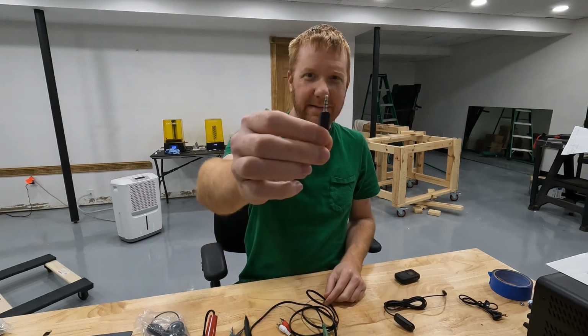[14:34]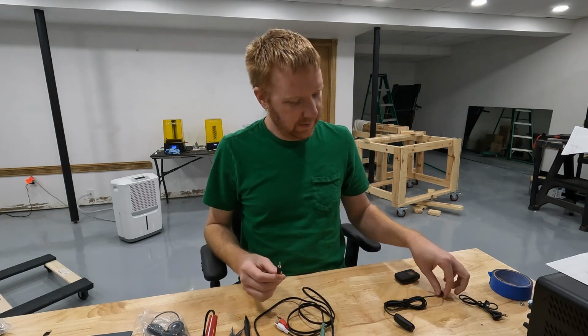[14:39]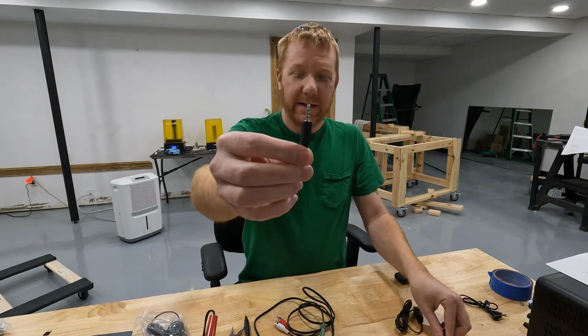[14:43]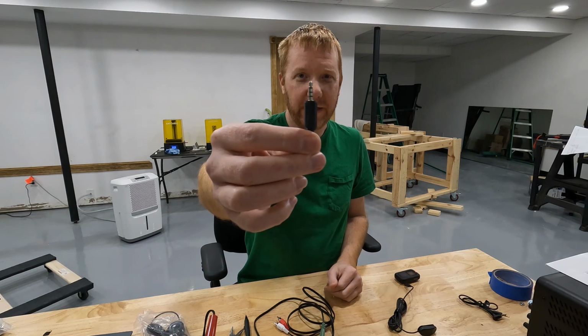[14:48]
This is called a TRS plug, by the way. I don't know what the mono one's called, but I know that this is a TRS. And this guy is what they use for the analog signals. So the mono one's for the switches. They're very simple. It's just on or off. Same idea for the analog joysticks.
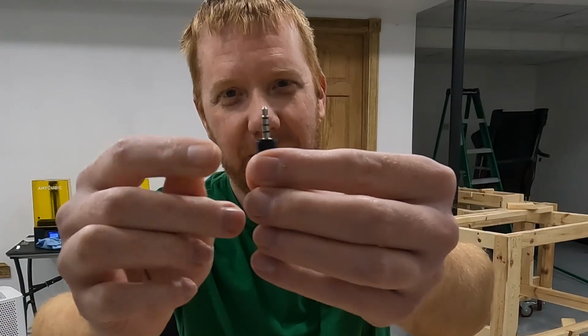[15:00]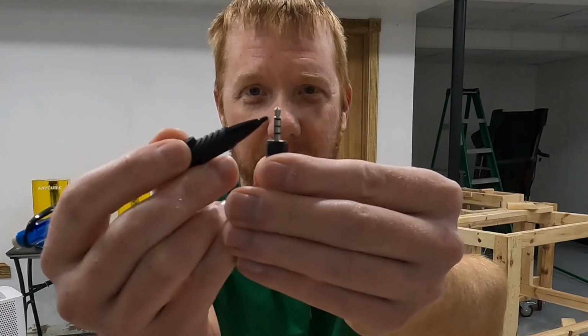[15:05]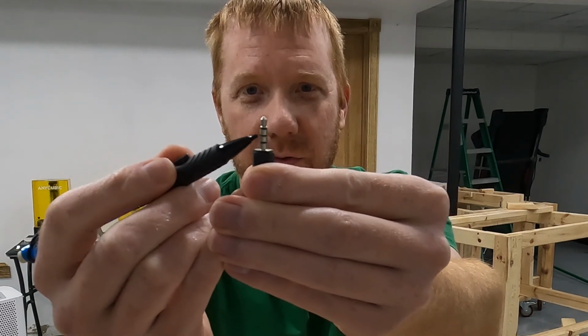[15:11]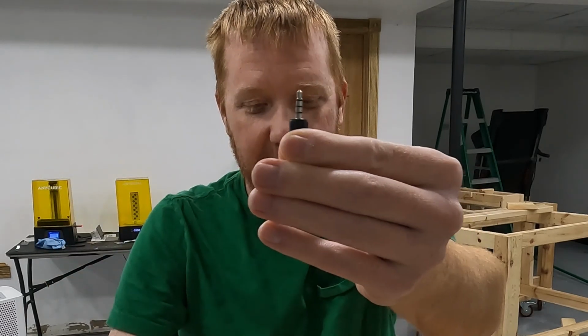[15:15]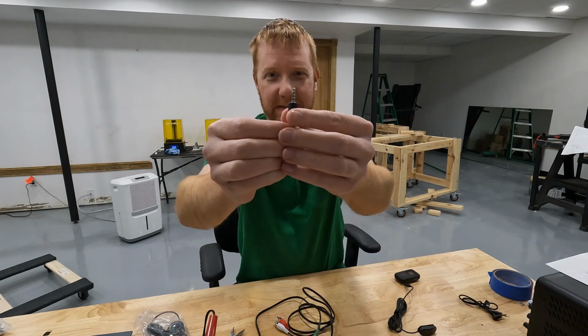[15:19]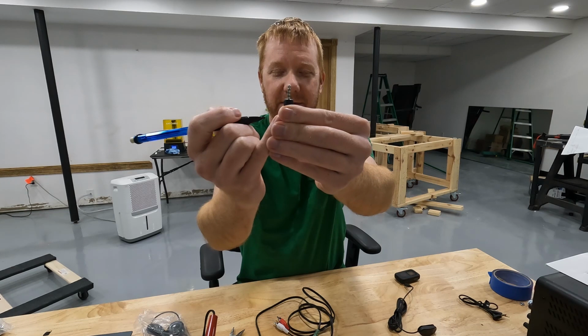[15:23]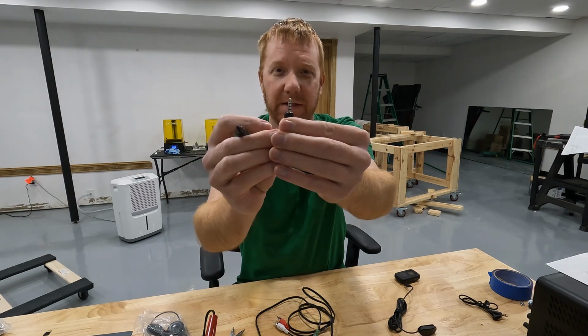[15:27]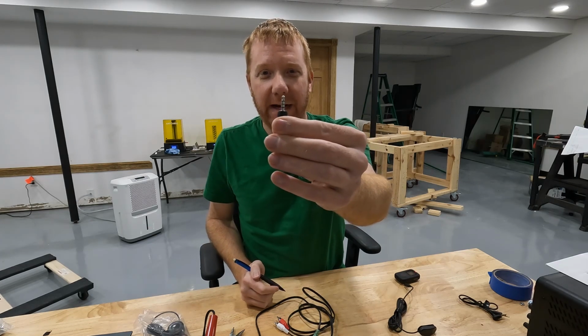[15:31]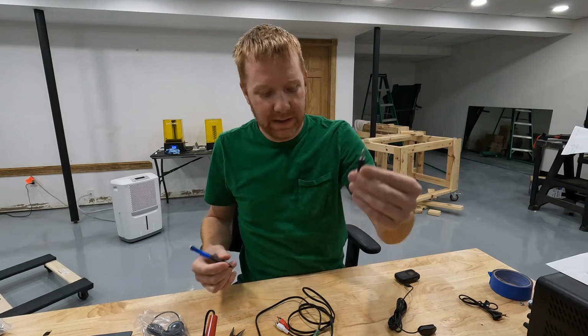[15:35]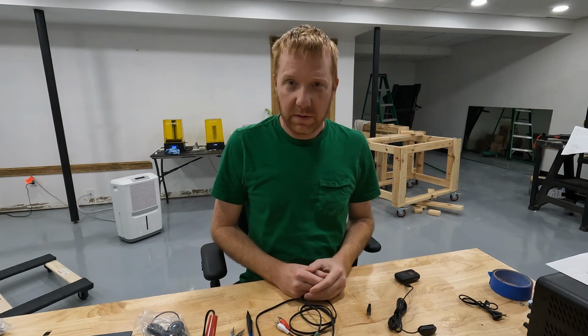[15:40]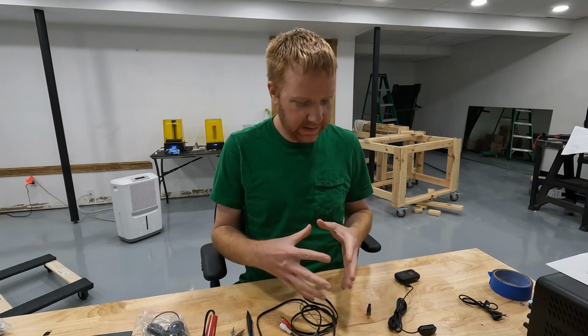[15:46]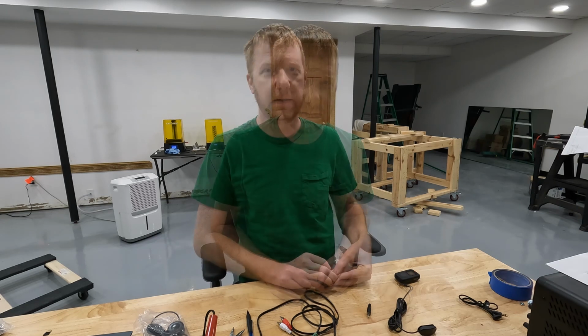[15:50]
This guy is a TRRS, and it's the same form factor, still a 3.5mm plug, but this one has 4 contacts on it. So once again, you have 3 insulating rings and 4 contacts. So the very top one is a contact, you have 2 center contacts, and then you have 1 at the bottom. The reason that these are used for analog is because the analog signals require a signal for the x-axis, a signal for the y-axis, and then you need a reference voltage and you need a ground. So that's 4 contacts. A TRRS plug has 4 contacts on it, so that makes complete sense. So that's what we're going to use for our controller. Pretty simple. It's a very compact design. It makes perfect sense to use that type of plug.
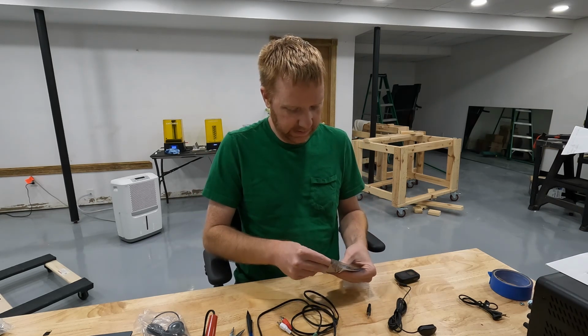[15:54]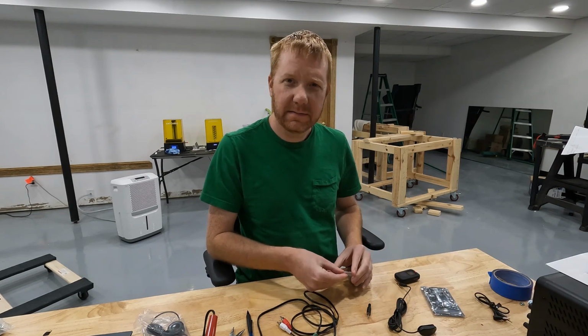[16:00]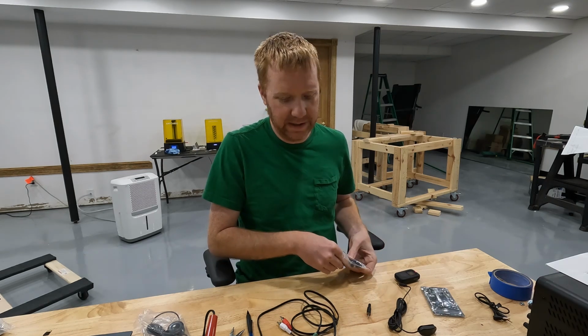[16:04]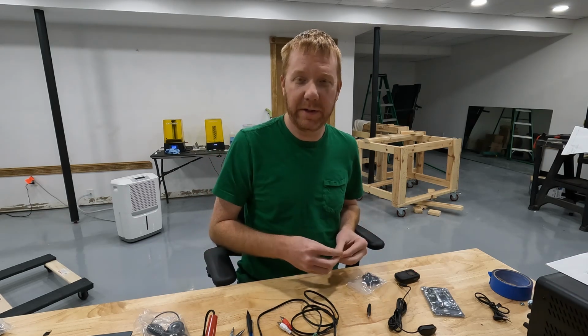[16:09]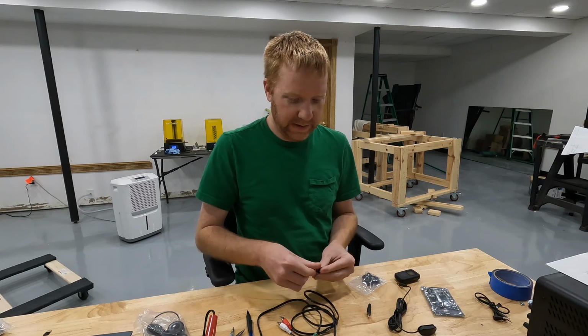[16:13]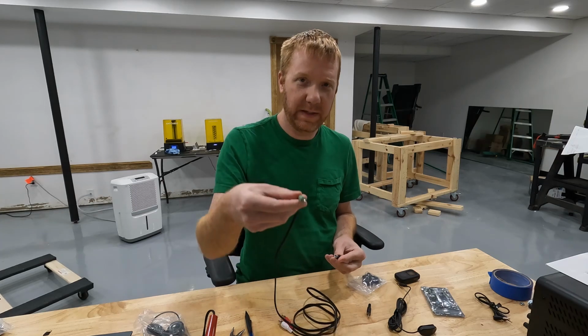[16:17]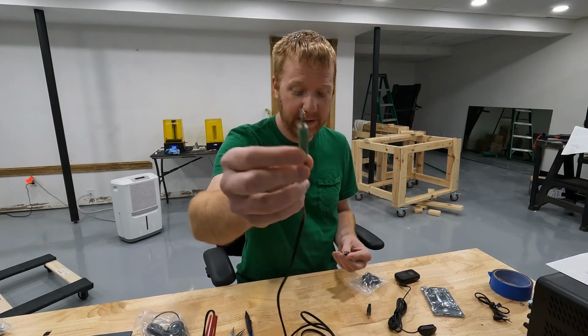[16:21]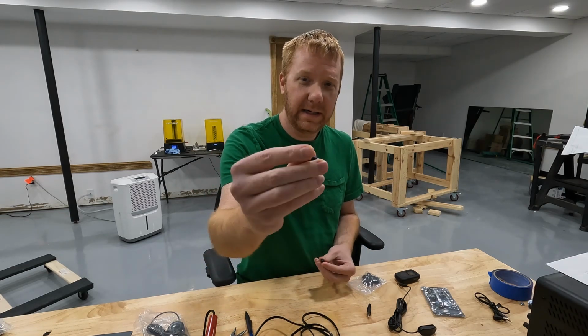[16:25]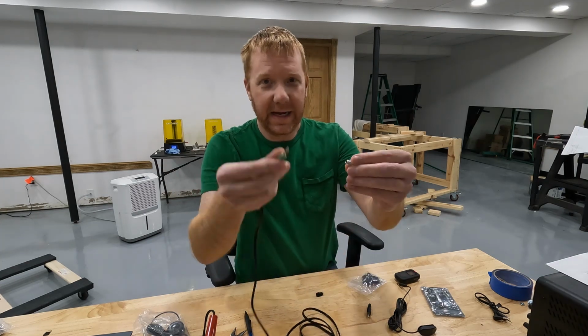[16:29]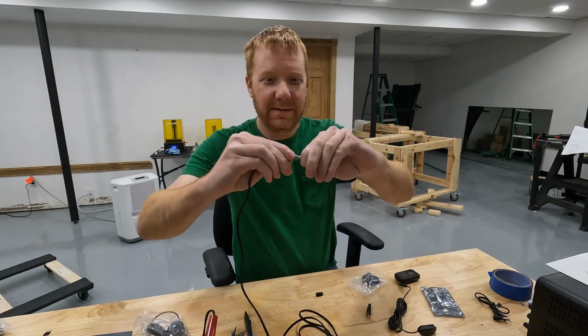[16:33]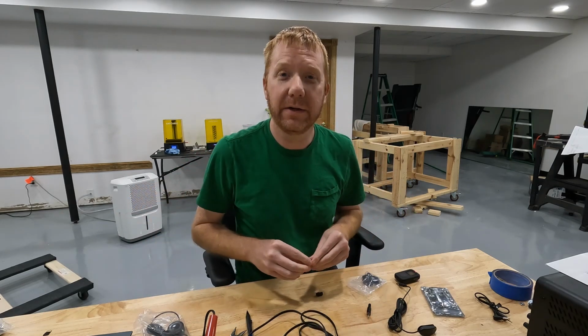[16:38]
I purchased all of this on Amazon, of course. I purchased 2 different kinds of jacks. Sockets? Jacks? I don't know the technical name. The female part of the 3.5mm plug. I bought 2 different kinds. Because I expected, per the Adafruit design, the plugs to be like this, so 3 contacts, I purchased a 3-contact socket. So this guy plugs in here. This would be like the receiving end of your phone or your radio or your Walkman or your CD player or whatever the kids are using these days.
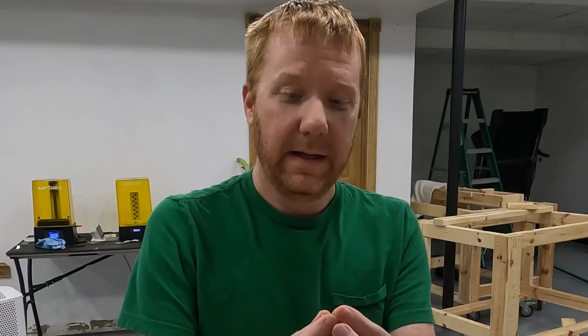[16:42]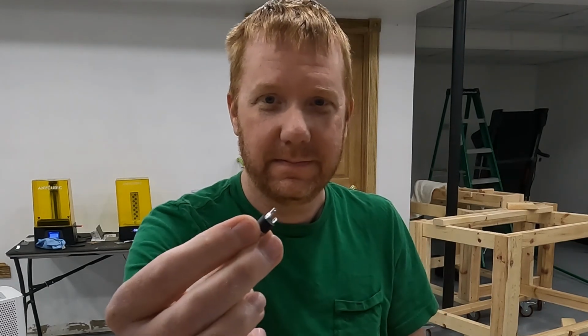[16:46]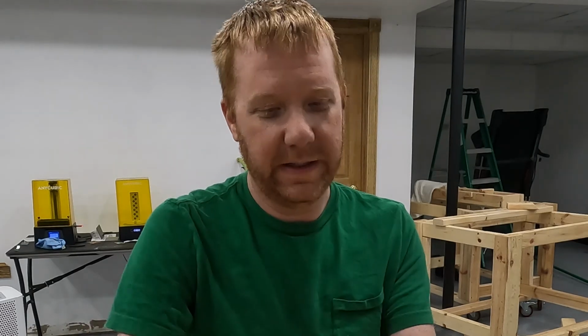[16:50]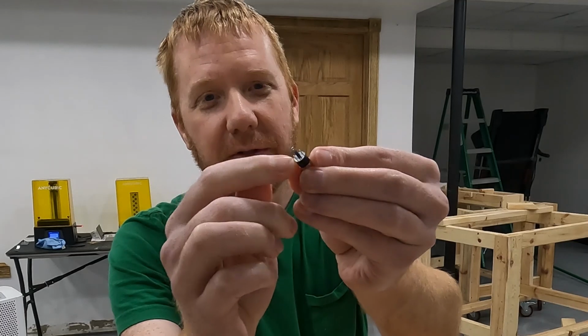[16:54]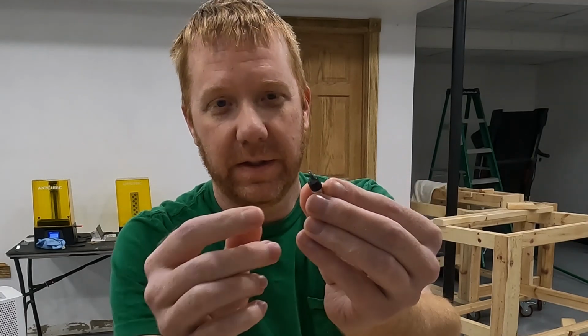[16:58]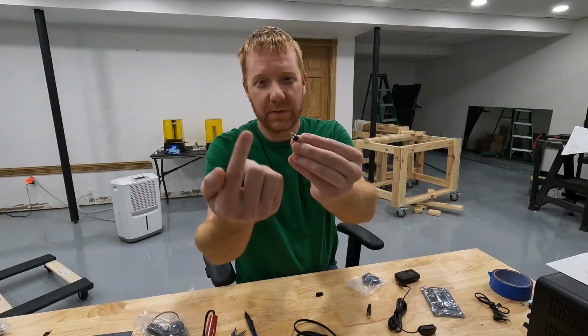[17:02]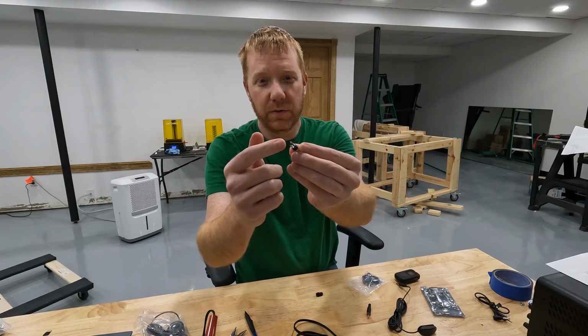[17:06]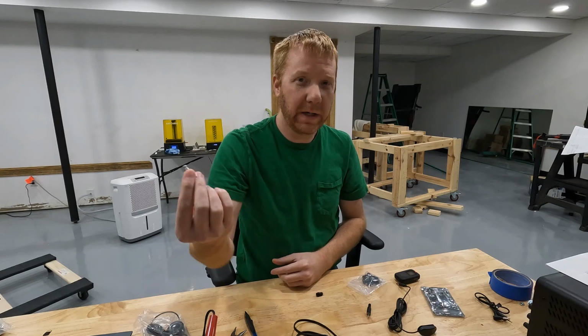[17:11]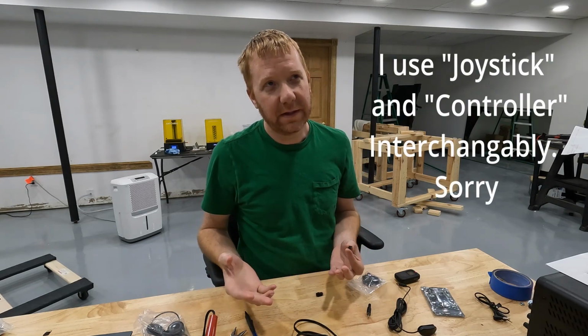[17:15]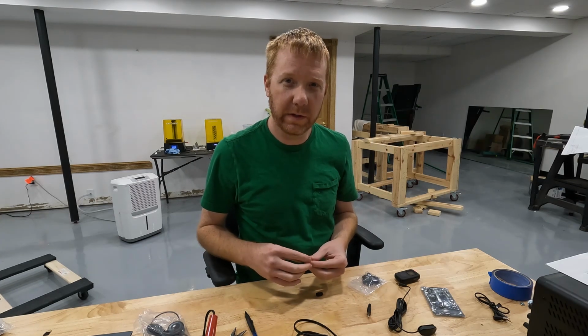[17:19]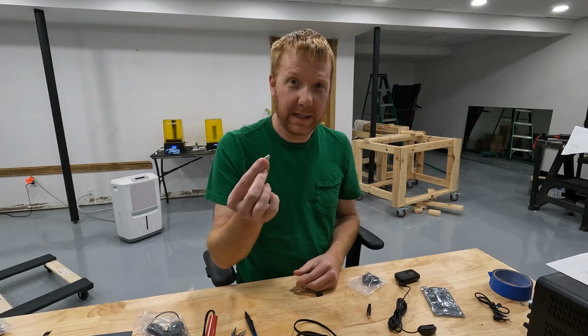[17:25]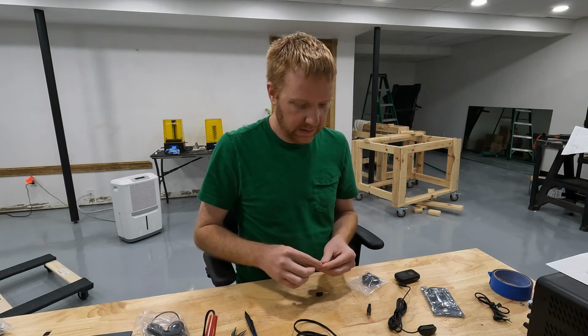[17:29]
And on the back end are your 3 contacts. Just like I said, these 3 contacts correspond to these 3 terminals. These 3 terminals are what we're going to wire our signals up to, our switches or whatever. We're going to use 2 of the 3 wires. We're going to use 1 for ground, and then we're going to use 1 for the positive signal. And then we're going to have 1 of these for each button on our joystick. I think the most complex joystick that we need to interface with is the PS4 controller or the Xbox controller. They're very similar. So we need enough of these to accommodate every button on those joysticks.
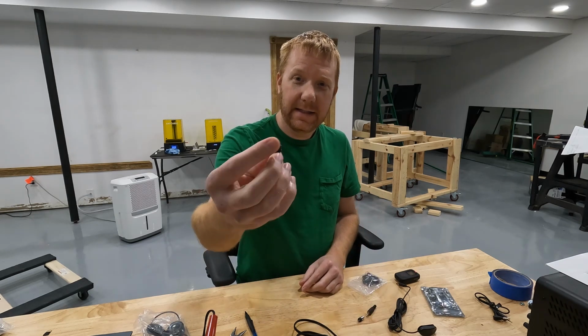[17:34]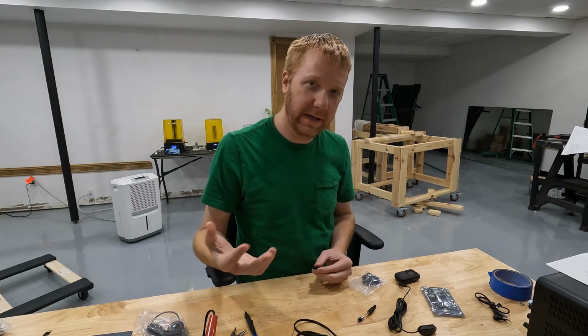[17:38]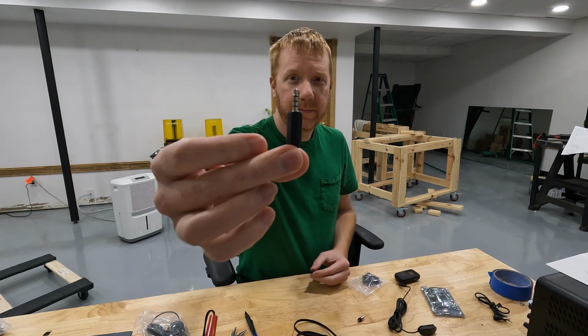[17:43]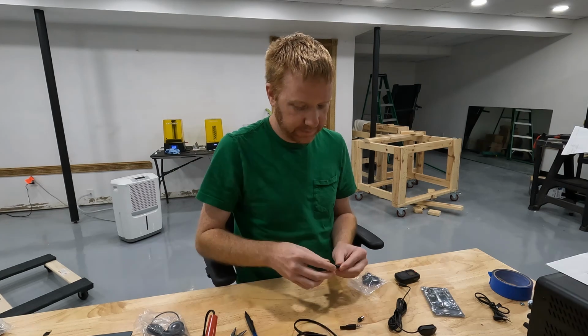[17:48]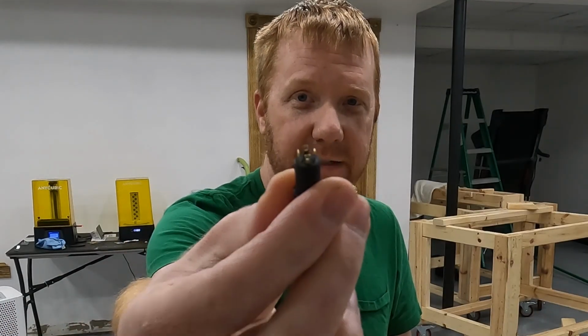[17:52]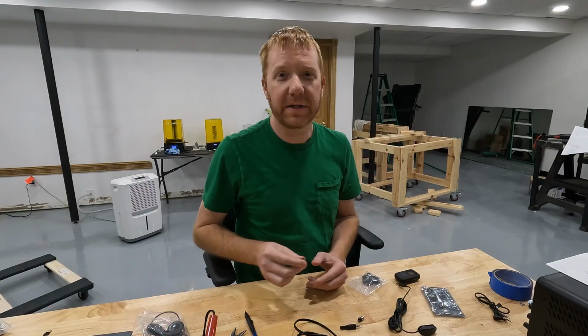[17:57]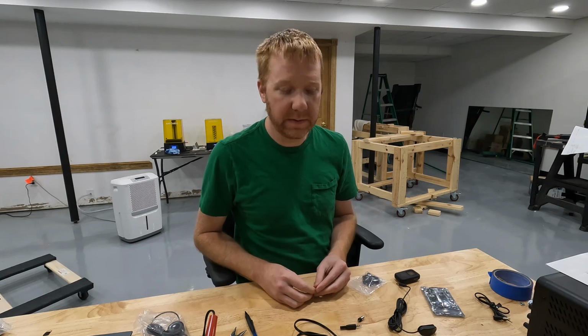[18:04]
And then the second jack or socket that I have is the 4-terminal kind. So that's for our analog buttons. That will be used to plug in our analog signals with the 4 contacts here. So as you see on the back end, there are 4 contacts associated with that. And for these, we'll use all 4 contacts. We'll have 4 wires coming off of it and going to our joystick or Brook board or whatever it is that we need to control.
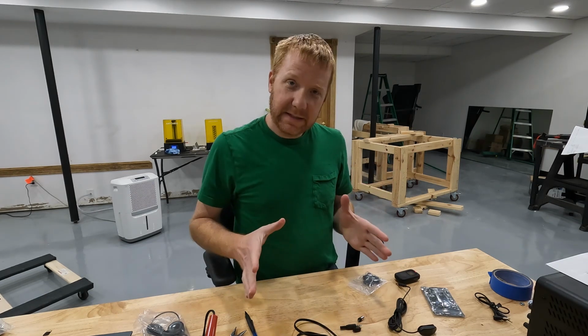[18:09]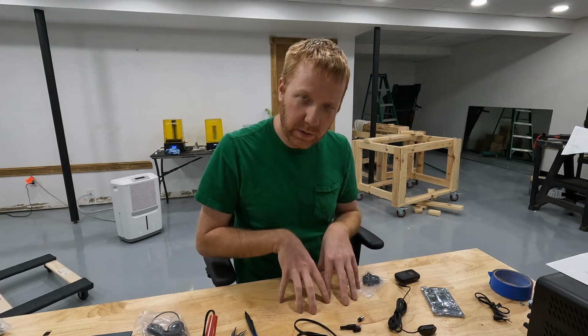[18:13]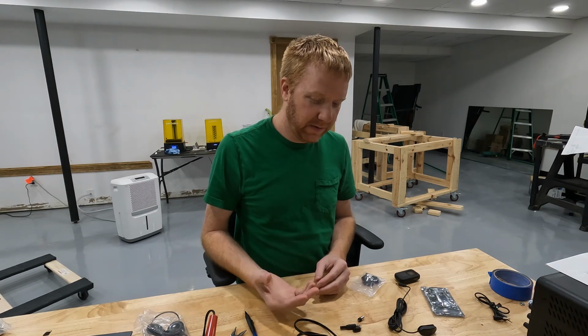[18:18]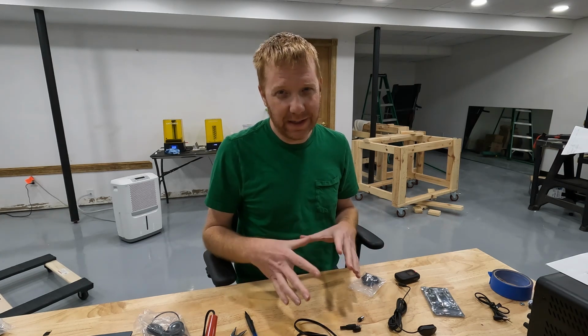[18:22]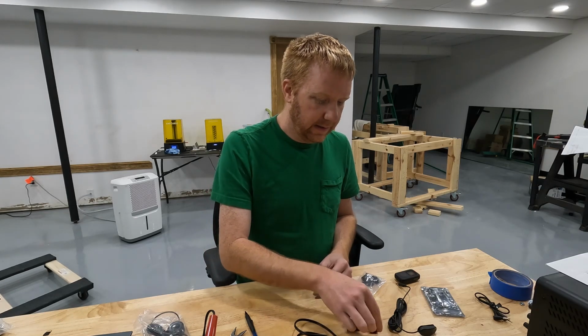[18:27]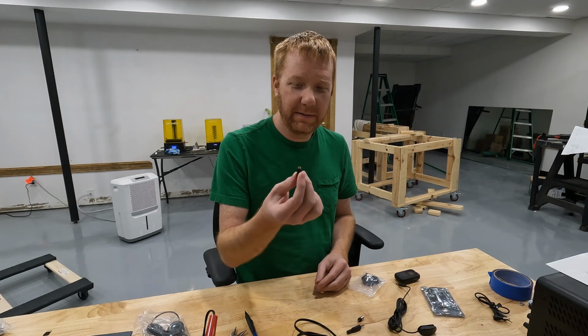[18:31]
So that's the basics to how we're going to interface our buttons and joysticks with our controller. Now I just need to figure out how to wire it up. I'm not a big fan of soldering. I like soldering, I'm just not real good at it, so I try to minimize it as much as I can. In this case, I didn't really have an option. So I'm going to have to solder wires on every one of these little bitty terminals, and I've been dreading it, but I'm just going to have to do it and get it done.
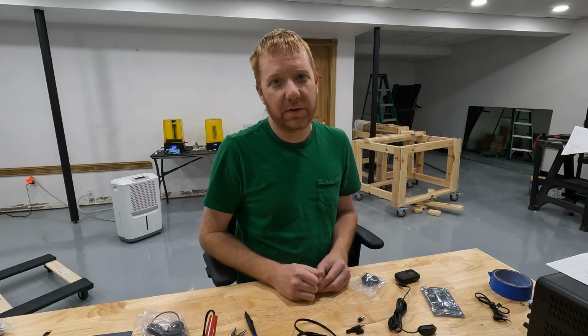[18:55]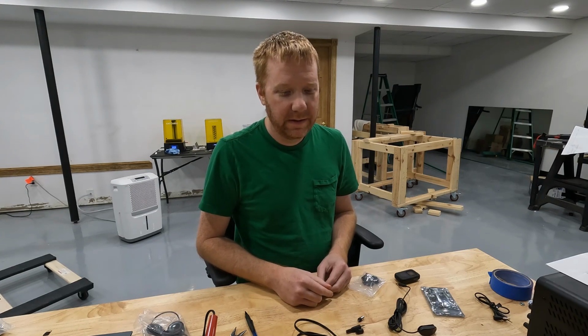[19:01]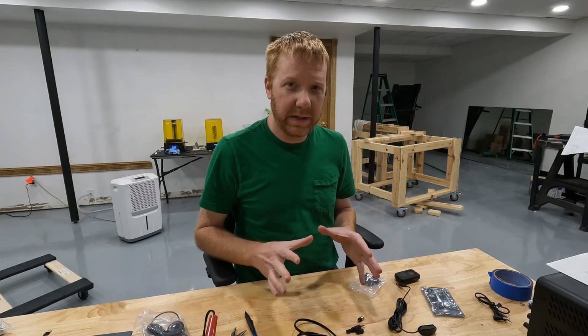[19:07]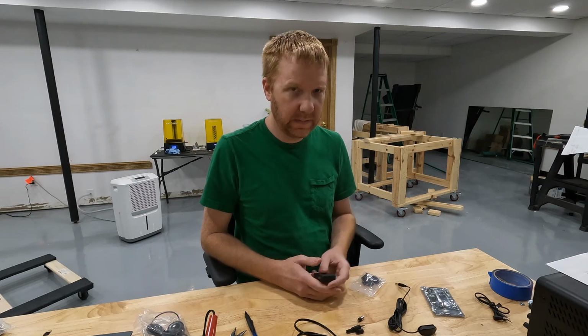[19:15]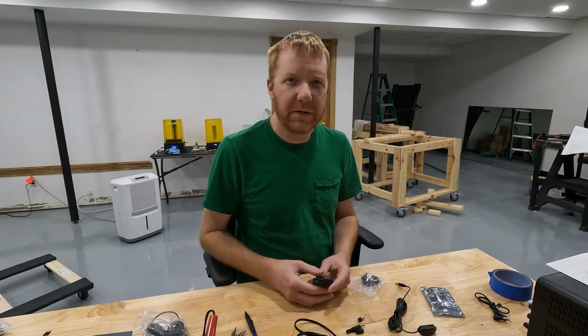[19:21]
Now the good thing is we're going to have a common ground across all of our buttons and switches, so we can just daisy chain grounds from one to the next. We don't need a ground wire running individually to our interface connector. So I need to figure out how I'm going to do that. I'd like to keep it as clean as possible and avoid the huge rat's nest wiring that I usually do. I'm going to try and make it a little bit cleaner this time. I'll lay it all out. I'm going to get some of these installed and then I'll bring you in and show you kind of what I'm talking about.
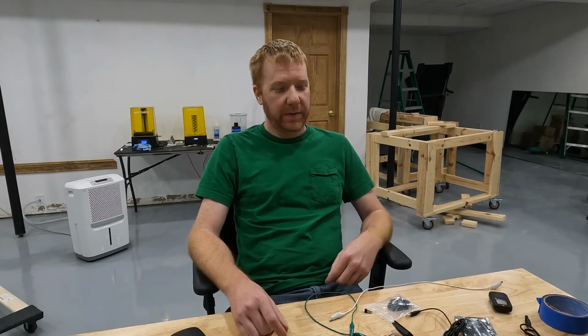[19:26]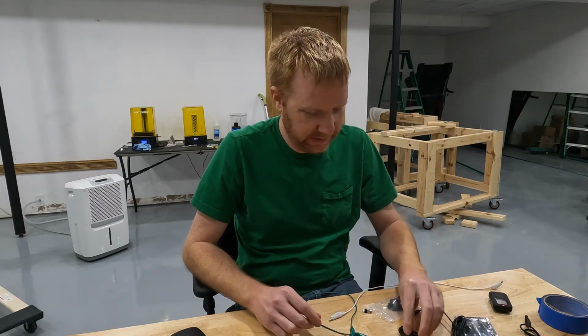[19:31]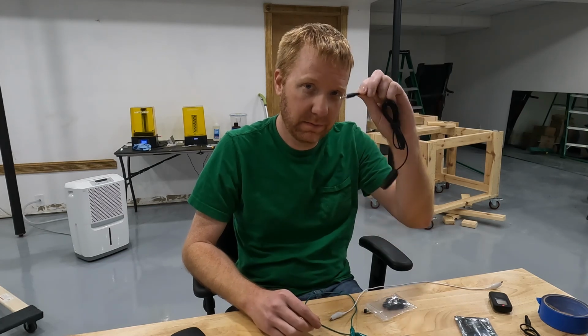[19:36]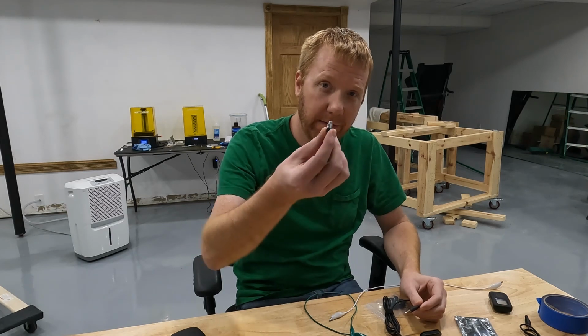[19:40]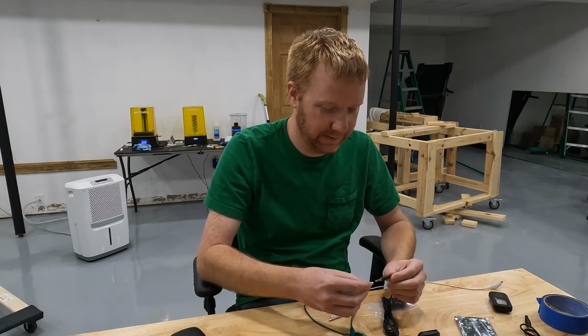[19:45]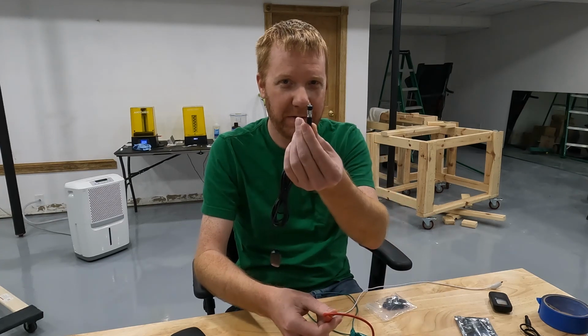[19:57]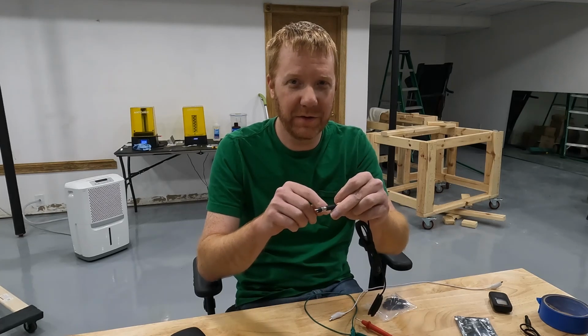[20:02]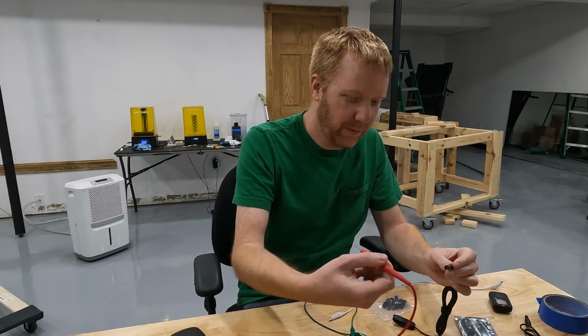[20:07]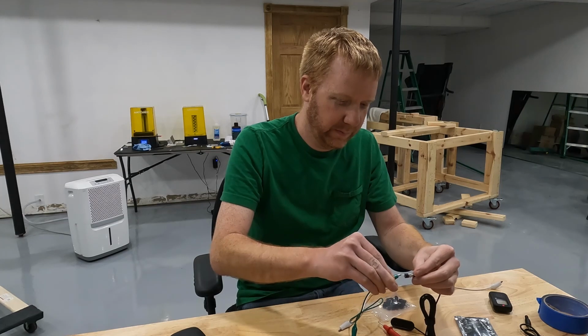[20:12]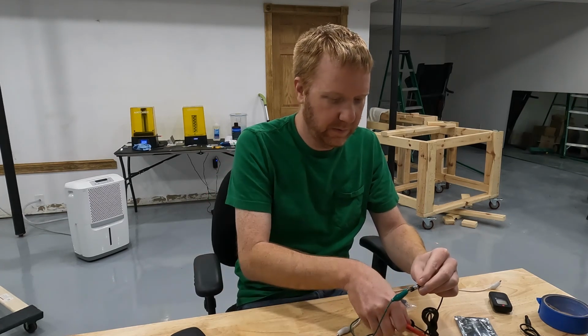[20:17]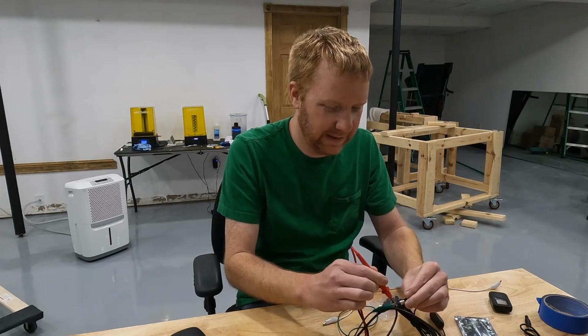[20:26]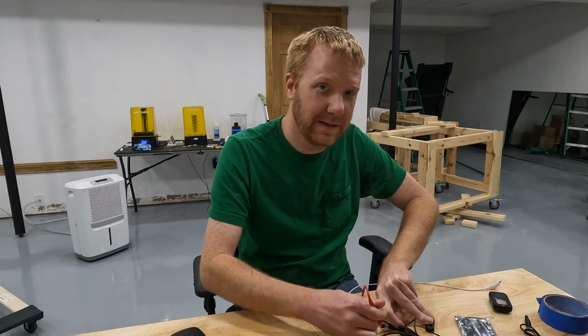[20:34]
I did a little probing with my meter here. I went ahead and plugged one of these mono switches into a stereo jack, the TRS jack that I have, and it does work. You can plug the two together and it makes complete sense. There are three terminals on the back of this, but remember there are only two contacts on the switch plug itself. One of the terminals, I'll grab the top terminal here, is connected all the time, and the other side is not connected at all until you push the switch. So this is not connected when the switch is open, and when you press the switch, that terminal is now closed.
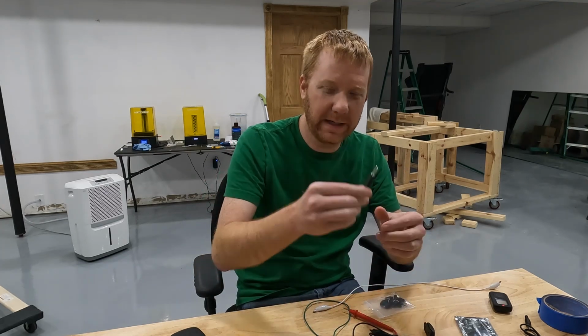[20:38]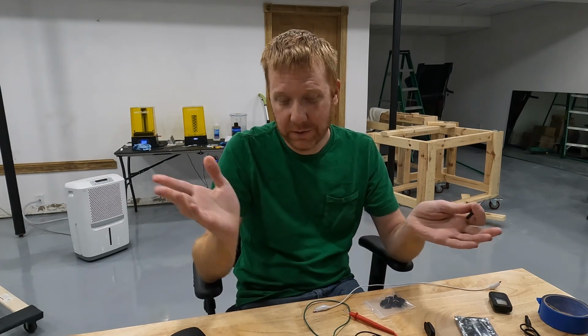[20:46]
And you could do the same with the 4 contact plug. You could also plug it in to a 3 contact. You're just going to have 3 out of the 4 available. So anyway, learn something new today.
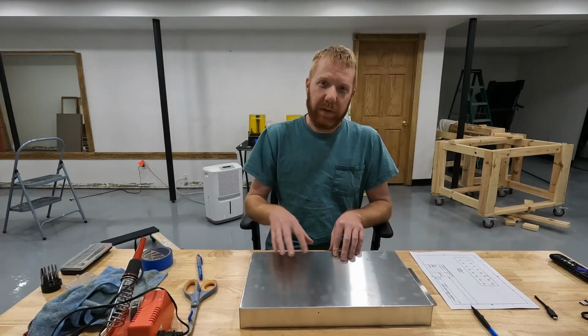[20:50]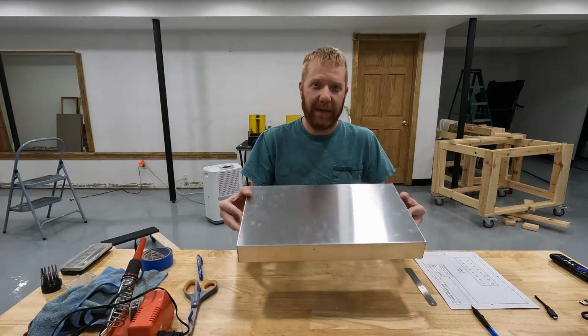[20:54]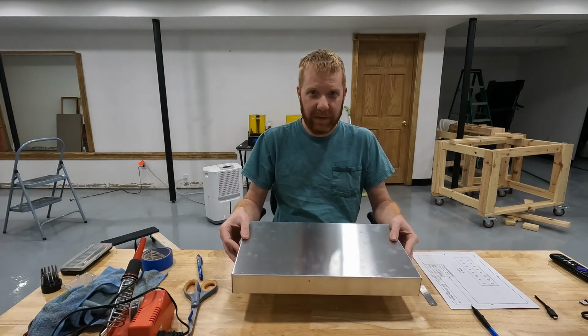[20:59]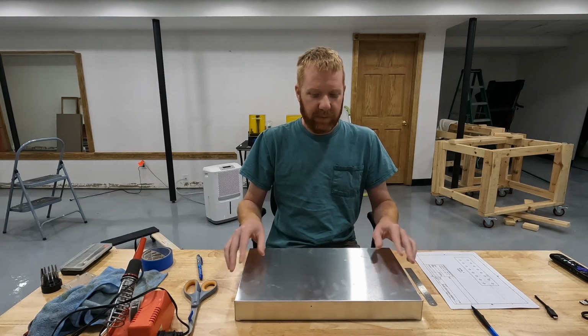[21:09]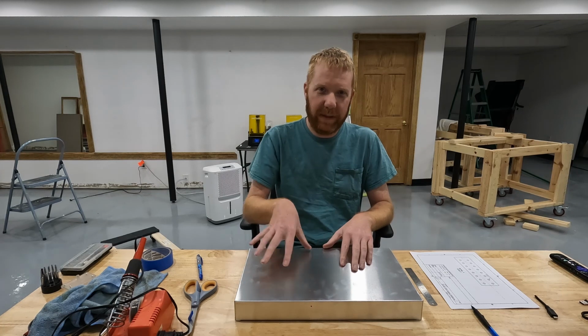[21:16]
We're going to go away from the wooden platform, and I'm going to use a sheet metal box, which I have here. This is a box made by Bud Industries. They're oftentimes called Bud boxes. And this is a 10 by 17 aluminum box. So we're going to start with that, and the next step is to drill holes into our box to attach our features.
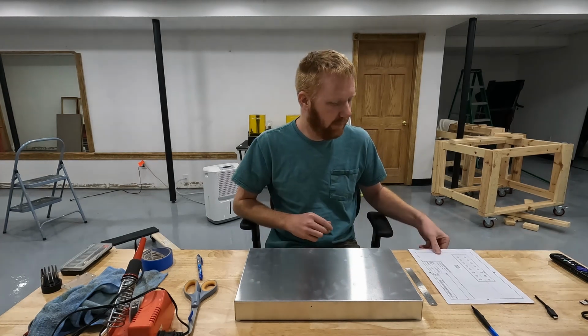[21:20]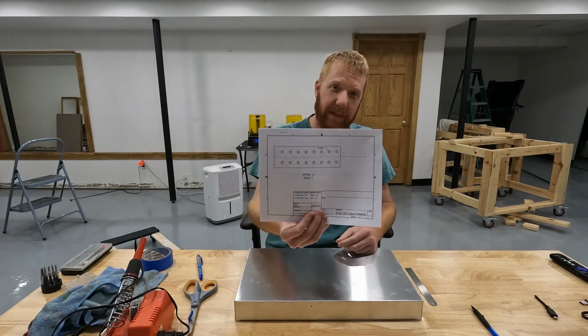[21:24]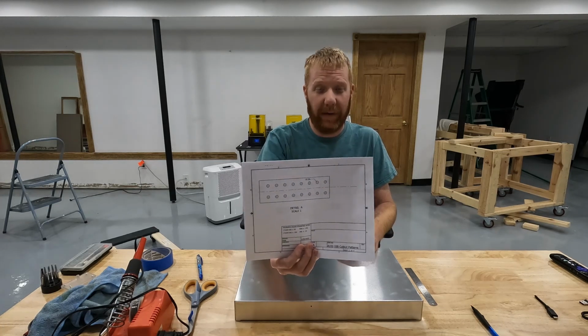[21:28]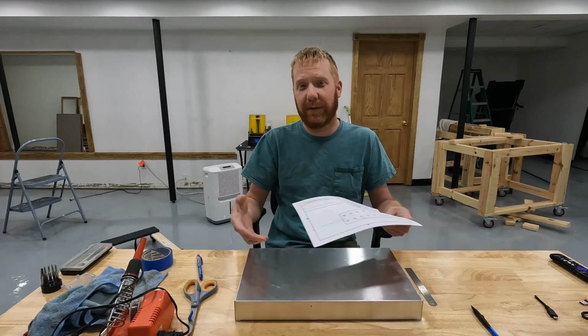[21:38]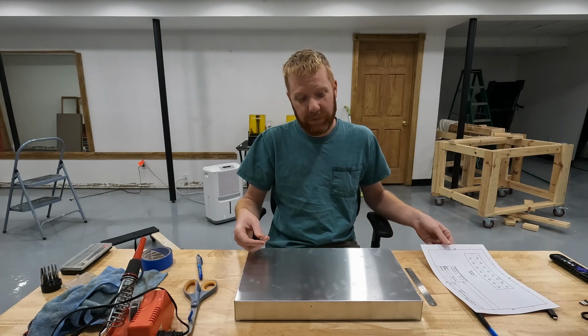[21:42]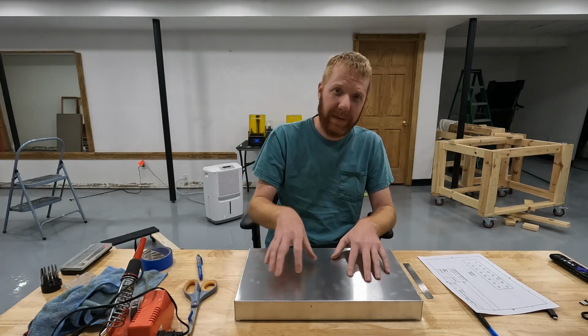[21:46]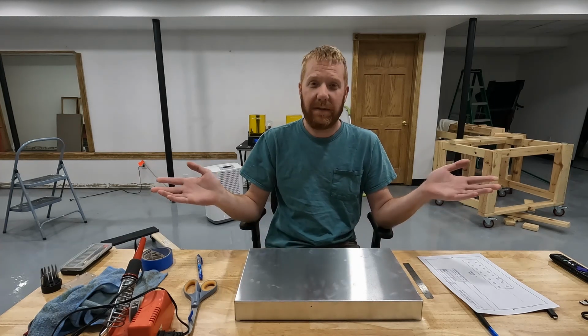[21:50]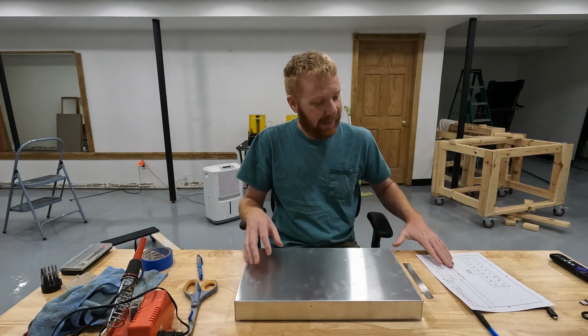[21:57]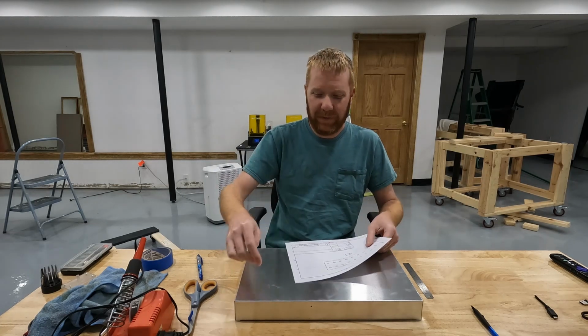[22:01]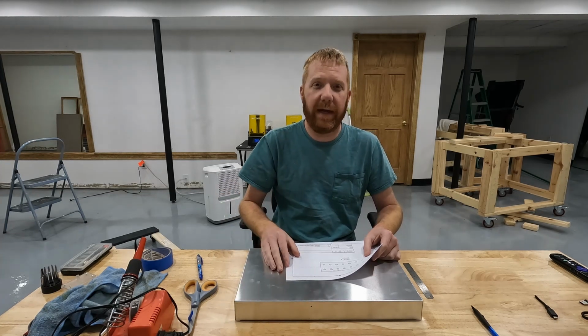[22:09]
In order to do that, I drew up hole patterns in CAD. I use CAD because I have CAD and I know how to use it. If you're not comfortable with CAD, you don't have to use a CAD program. You could use PowerPoint or Microsoft Word. If you're really old school, you can measure stuff out with a ruler and a pencil and just mark your holes where you want them. Or if you're a crazy person, you can just take a drill and start drilling at random. It's your controller, you do you. But what I'm going to do is cut these patterns out, tape them in the locations that I want, and then cut them out with a tool of some kind. So let me get these cut out and I'll show you what I'm talking about.
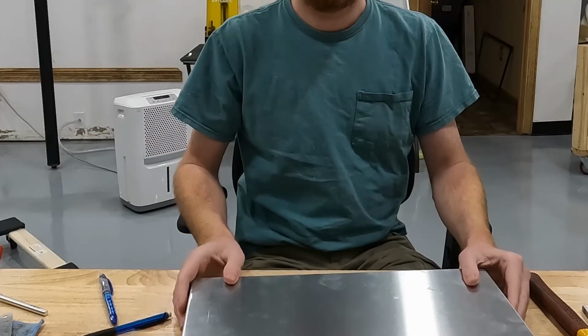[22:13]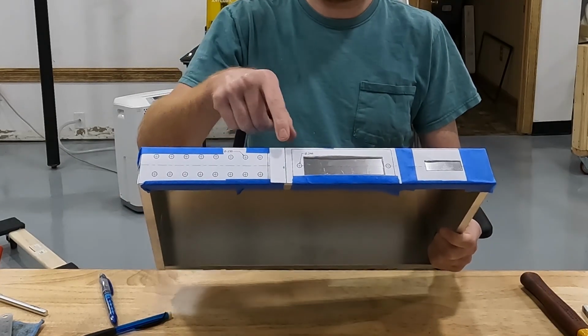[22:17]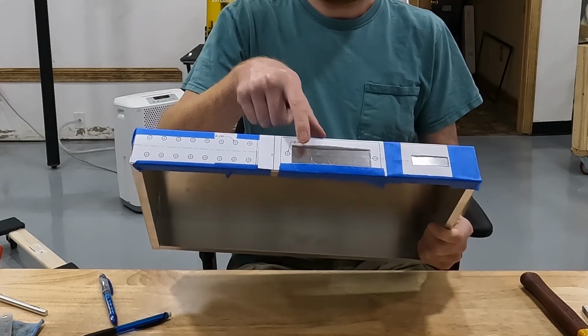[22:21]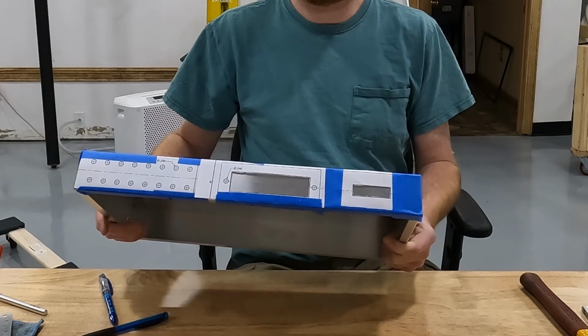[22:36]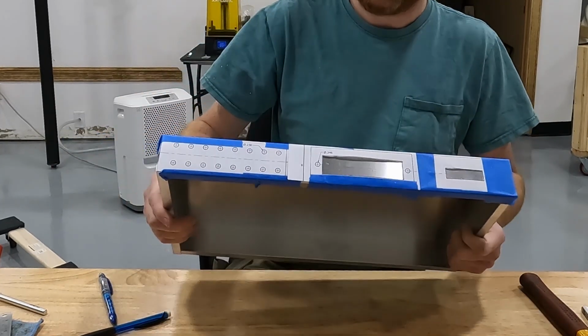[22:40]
Alright, we got that done. So what I did is I cut out my patterns. I've got 2 slots that I need to cut out, so I cut slots out here, and then I'll take a permanent marker and trace around that. Same here, I've got a slot that I need to cut out of the sheet metal, so I'll take a Sharpie and mark around that as well.
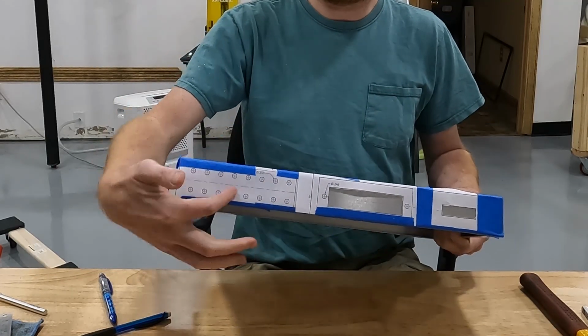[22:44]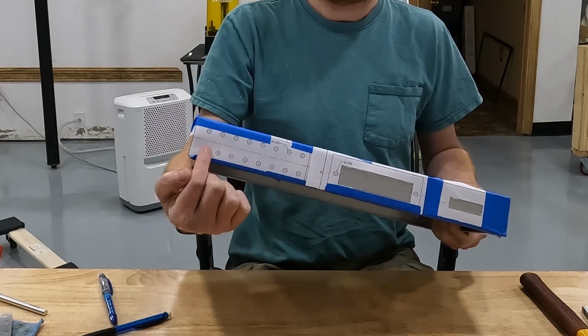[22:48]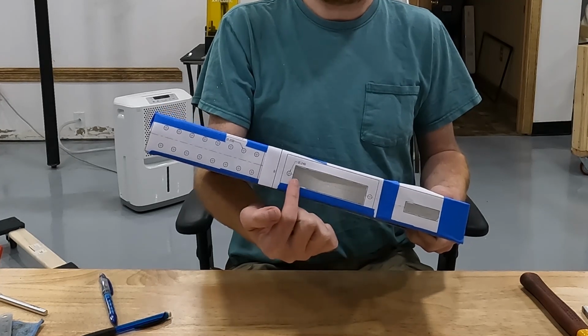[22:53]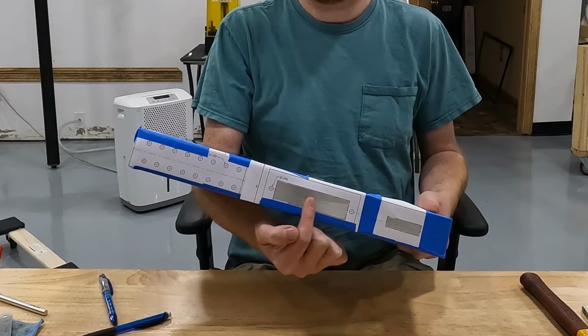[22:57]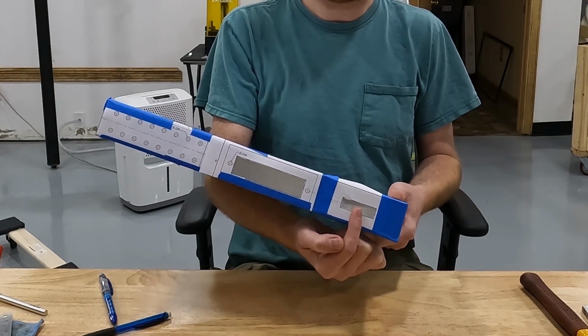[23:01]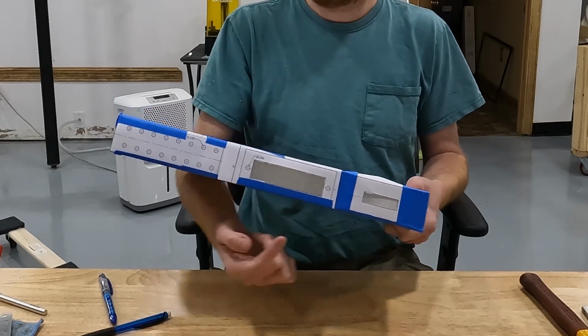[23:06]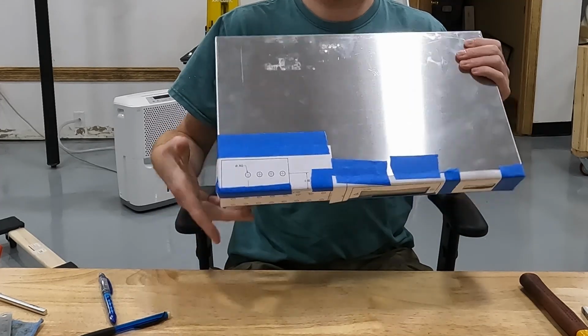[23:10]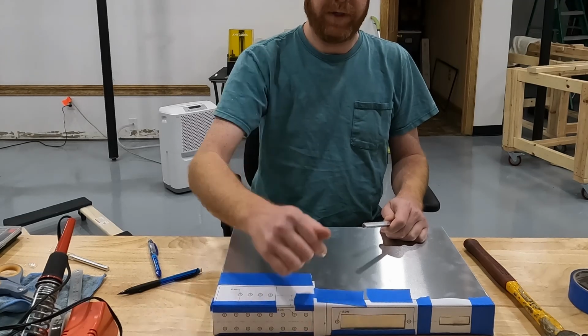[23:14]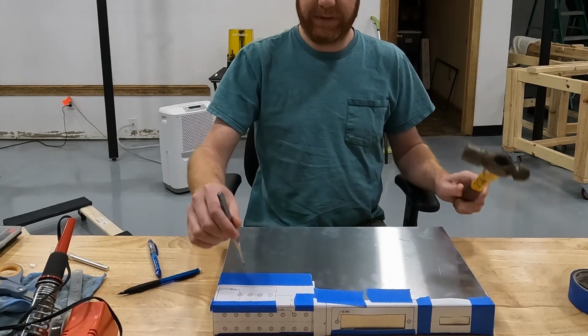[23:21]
And then the rest of them are holes. These will be my button connectors, all of these holes. These are going to be the RJ45 or Cat6, Cat5 connectors in this slot here. And then this guy is going to be the HDMI plug here. And then on the top I've got 4 holes for LED lights. First I'm going to mark my slots with Sharpie, and then I'm going to go through and punch. I'm going to take just a hammer and a punch, and I'm going to put my punch in the middle of each one of these circles that I have for hole patterns.
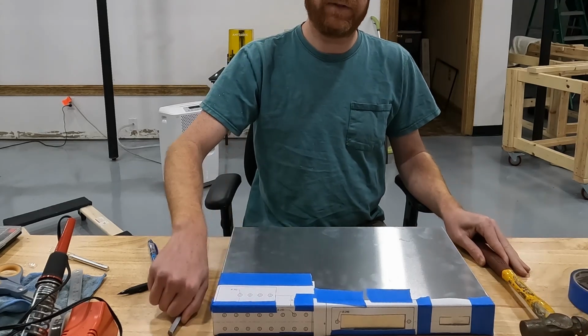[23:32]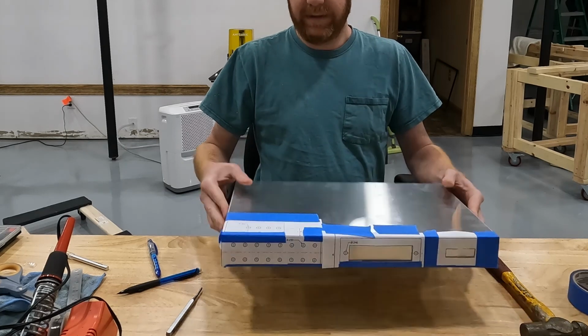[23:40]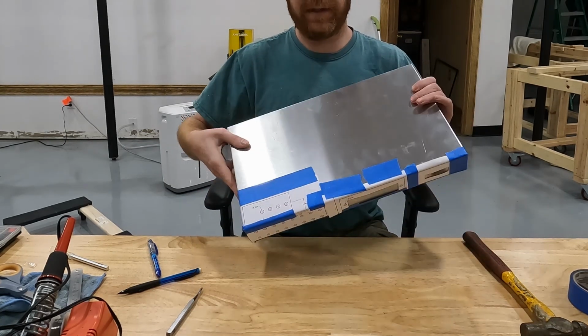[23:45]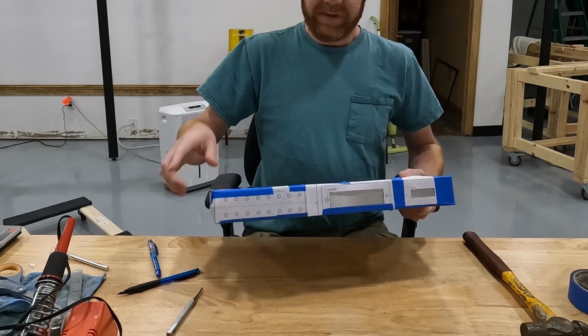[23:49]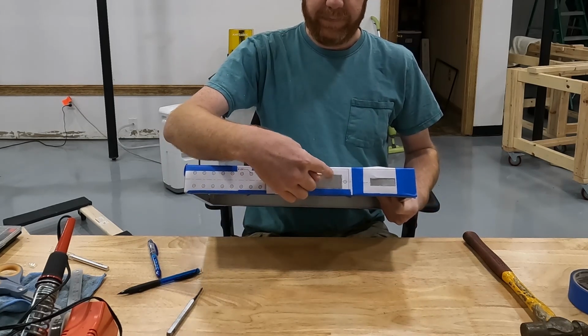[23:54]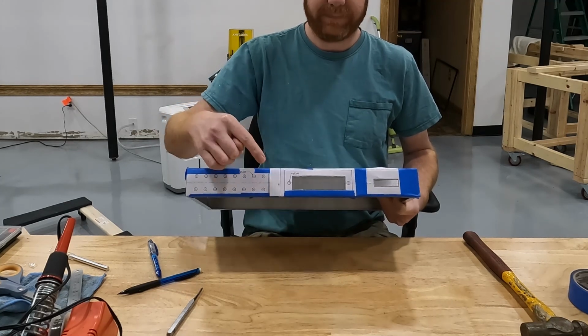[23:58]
I'm just going to tap it, and that'll give me the center of each circle, and then I'm going to go through and take a drill and a drill bit and drill through all of those holes. I did mark on my drawing the diameter of each hole size, just so it's there and I don't have to look it up whenever I do go to drill holes. Once I get that done, I'm going to peel all the paper off, and then what will be left are rectangles outlined in Sharpie.
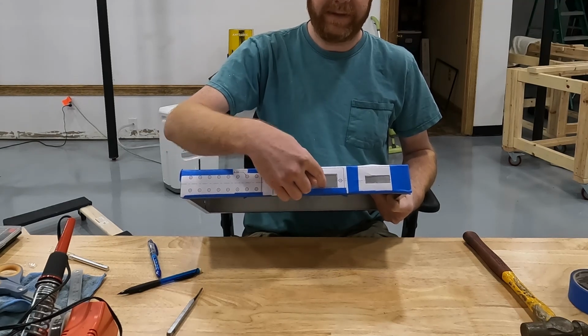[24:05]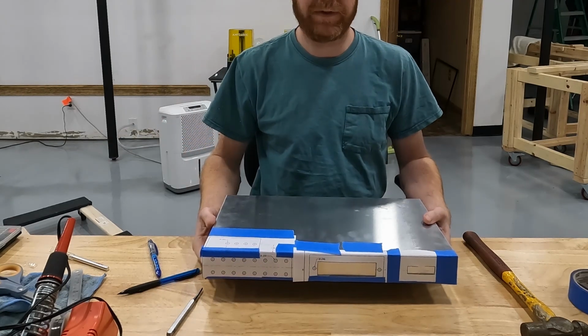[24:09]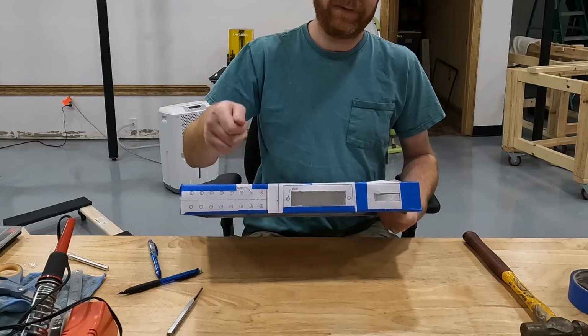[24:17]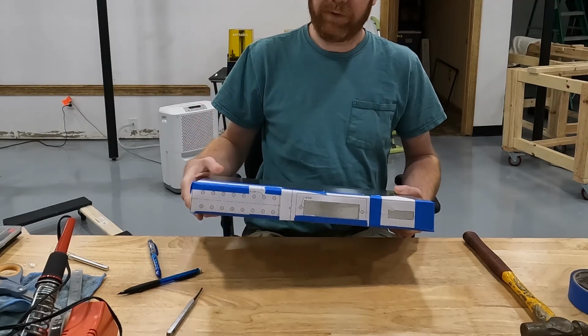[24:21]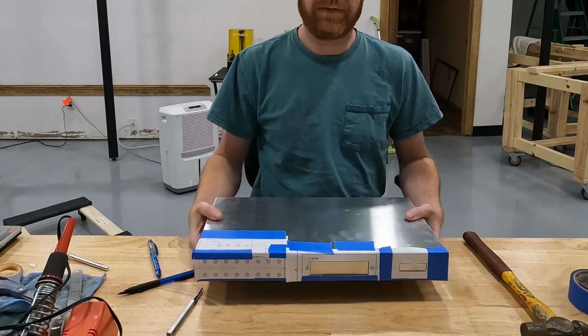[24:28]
And I'm going to take a jigsaw and cut those out. It'll either be a jigsaw or a Dremel tool, most likely. Not really sure how I'm going to do it, but it's going to be one of those 2 tools. You could use a hacksaw, you could use a little handsaw blade. I personally am a big fan of power tools. I'm pretty lazy, so if I have a motor on it and I can just zip, zip, zip, that's what I'm going to do.
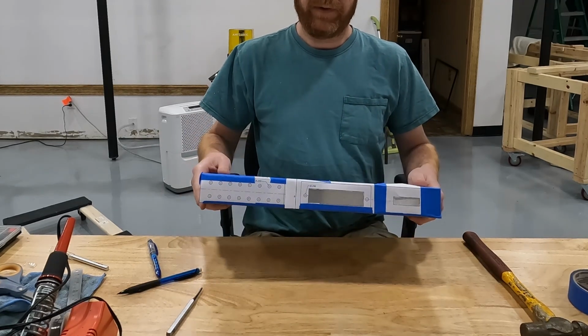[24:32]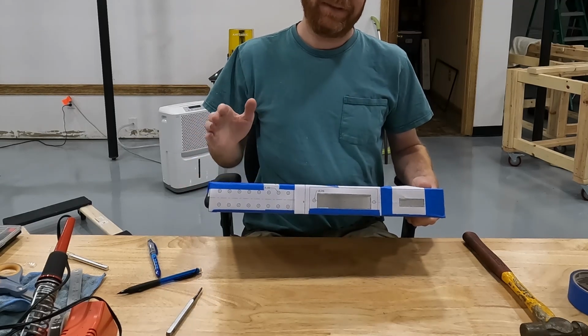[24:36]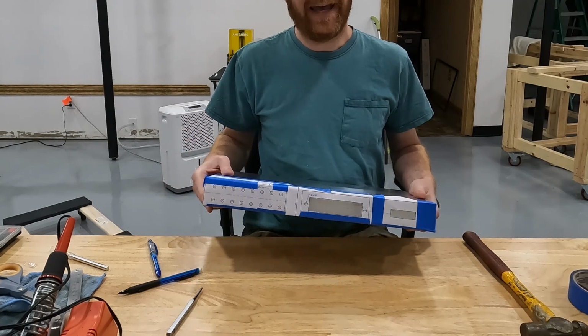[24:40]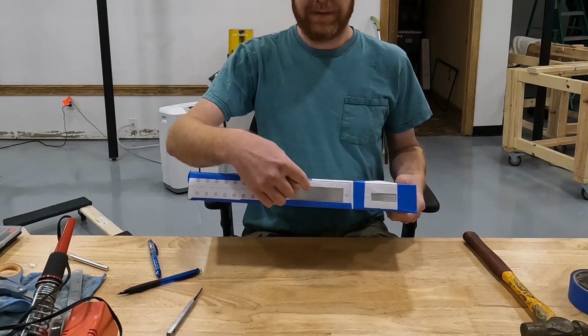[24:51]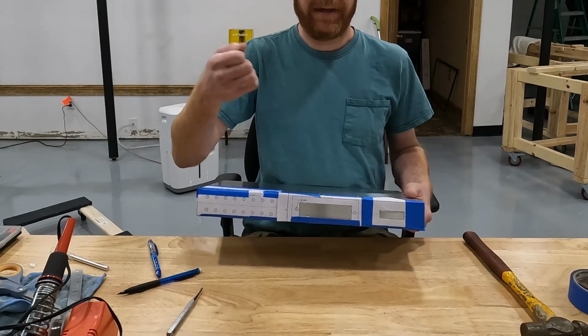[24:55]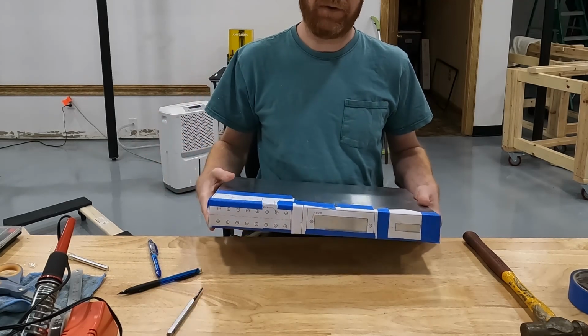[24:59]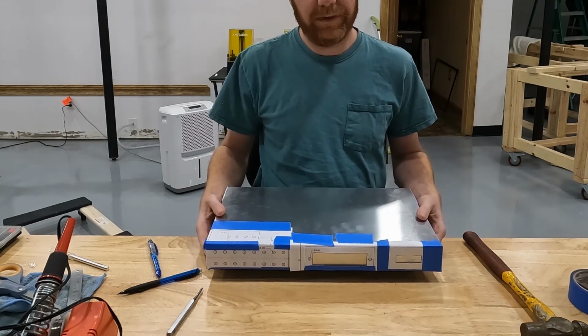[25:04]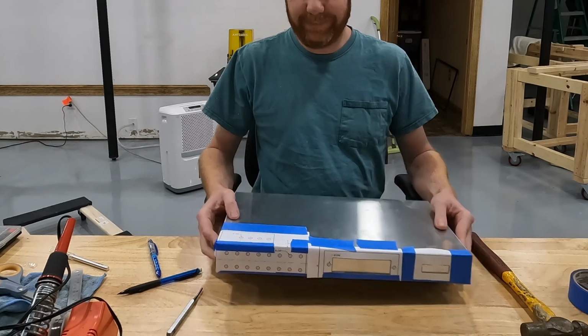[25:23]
Remember, when you're making hole sizes like this, it's a lot easier to remove material than it is to add more material if you make the slot too big. So always err to the small size, and if your widget doesn't fit in the slot the first time, you can always take a file and file the hole a little bit larger. If you make the hole too large, you're just stuck with that unless you're a really good welder and want to take time to weld material back. If that's the case, then good for you. But I would recommend erring to the small side. So that's what I'm going to do. I'll be back.
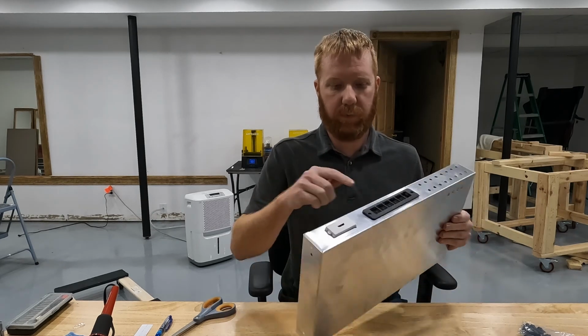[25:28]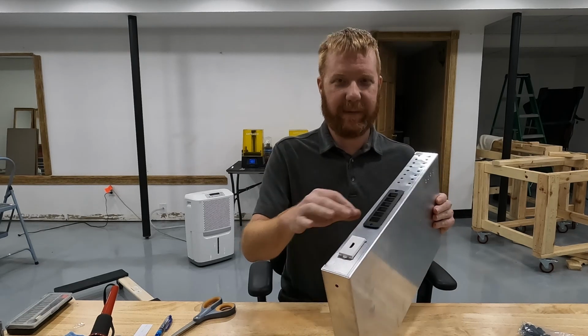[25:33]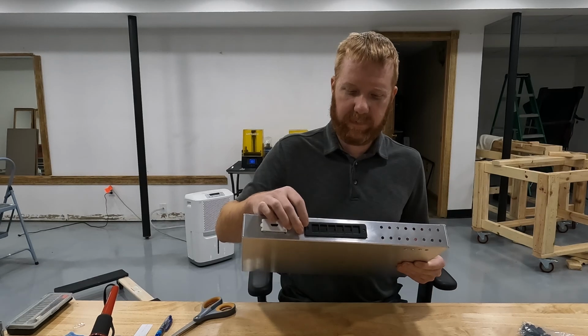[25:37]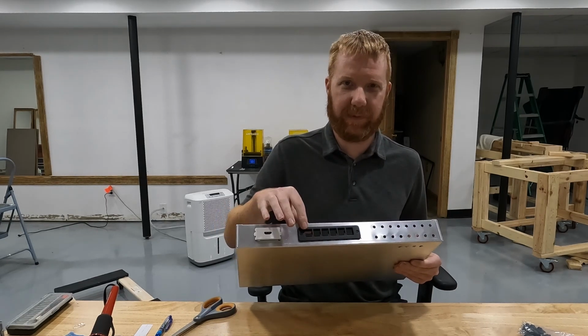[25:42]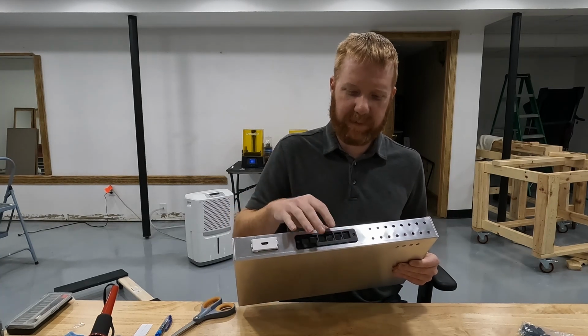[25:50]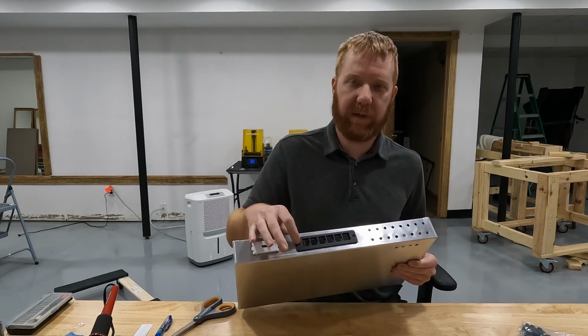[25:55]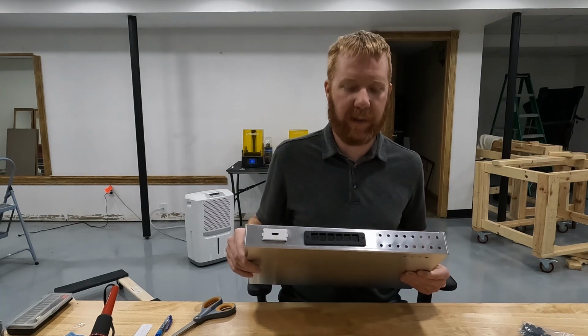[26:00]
I've got the holes larger, and my devices now fit inside the holes. I did have to remove the little Cat 6 connector, Keystone connector plate. It came with little push pins that are supposed to go in the holes, and that didn't line up exactly like it needs to, so I just knocked those out, and I'm going to use regular screws in my holes with nuts on the back side, and then that'll fix that problem.
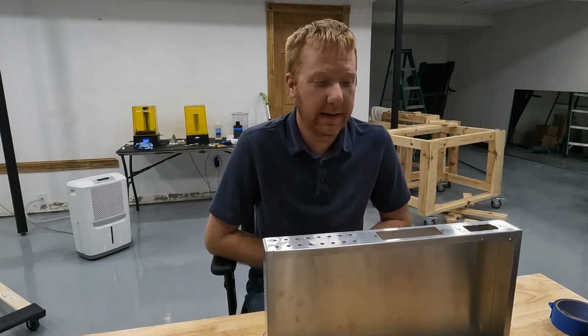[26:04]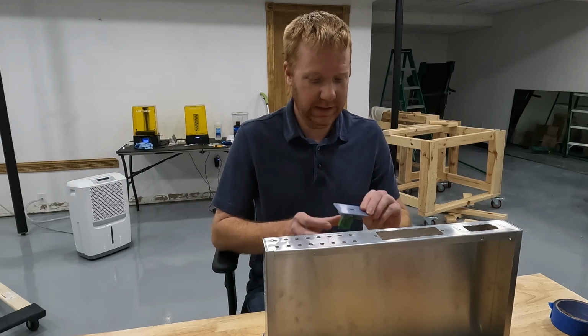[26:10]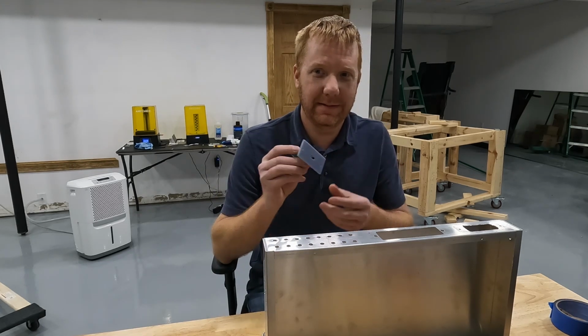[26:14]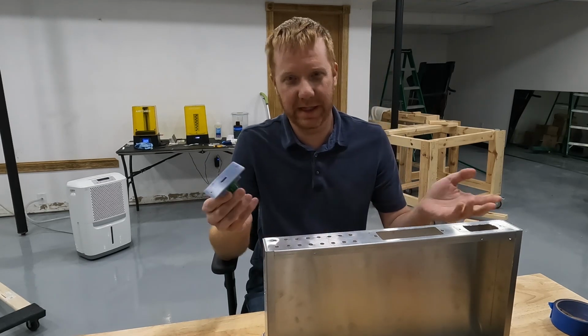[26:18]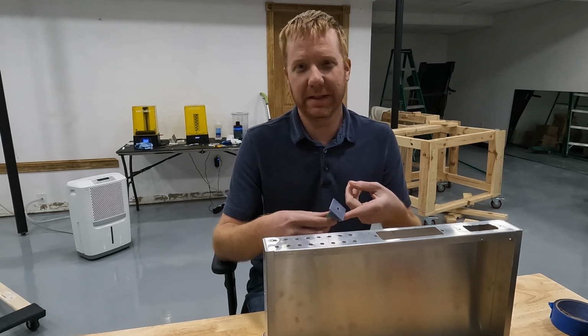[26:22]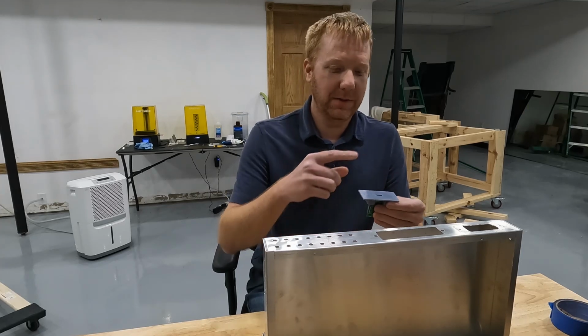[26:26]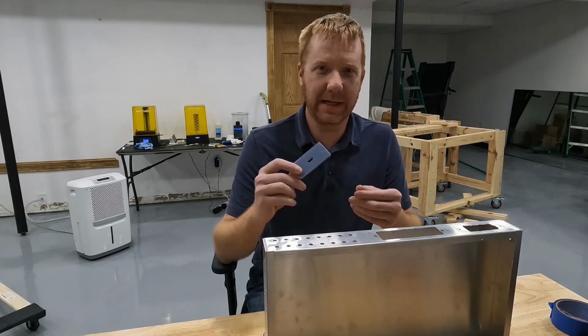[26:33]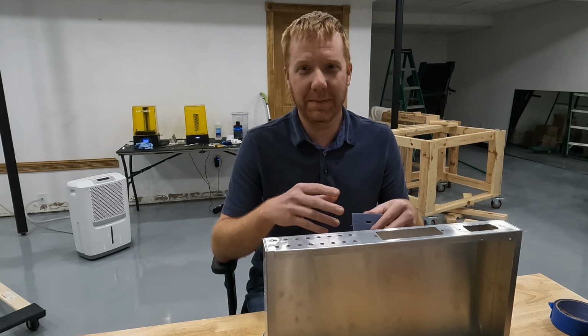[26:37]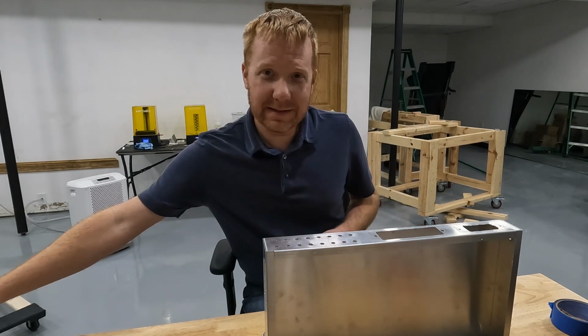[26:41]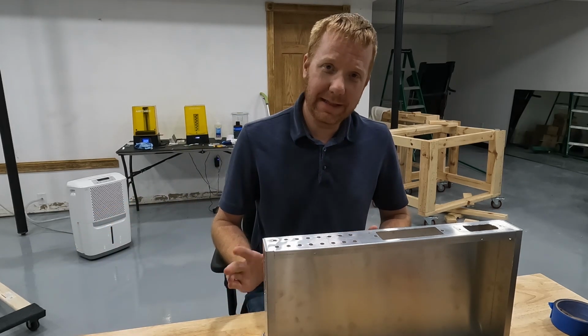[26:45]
When I first came up with this concept, my plan was to use an HDMI connector to connect different controllers into my modular controller. So just for example, you could hack into multiple controllers like a Super Nintendo or a Sega Genesis or an N64, and you could interface that controller with the modular section of the controller via HDMI. And I thought I was being really clever because HDMI is cheap and everybody has HDMI cables, and there are 20 pins inside of an HDMI cable. However, I had never cut an HDMI cable in half, so I didn't really know what was inside of it. I just assumed that there were 20 separate wires since there's 20 different pins.
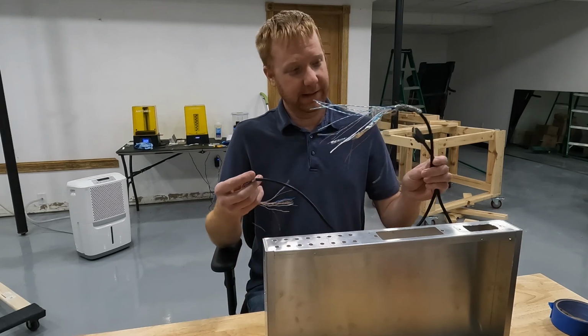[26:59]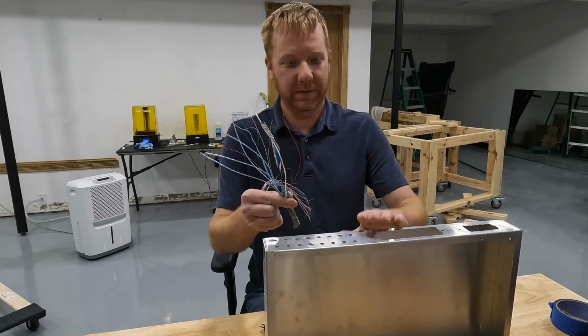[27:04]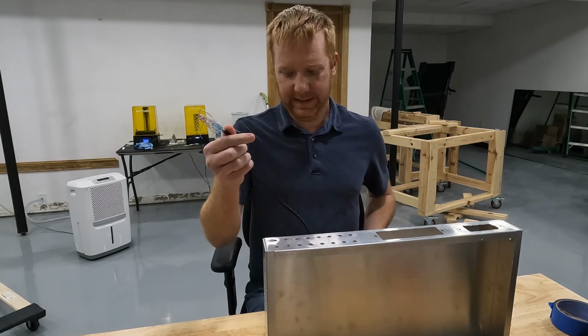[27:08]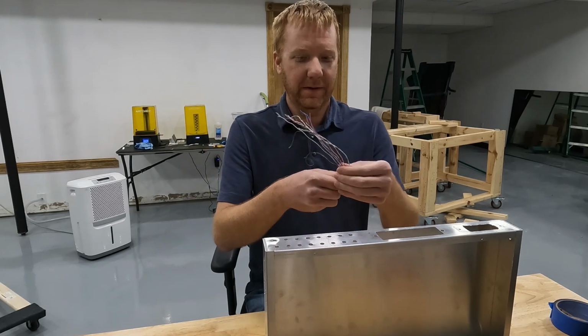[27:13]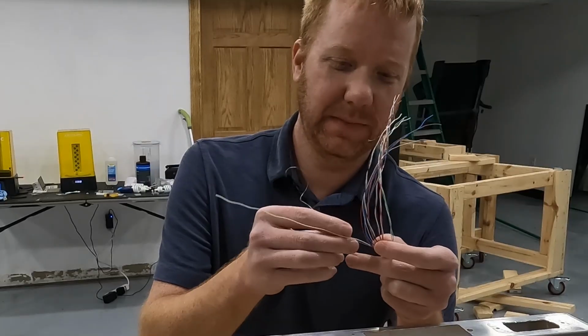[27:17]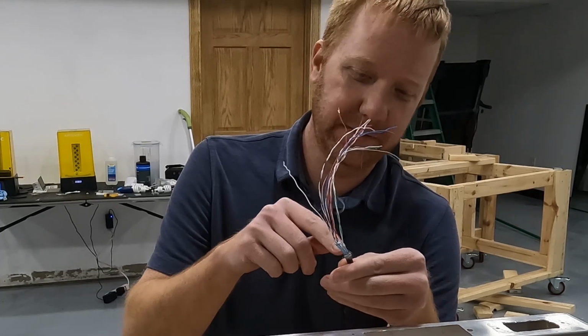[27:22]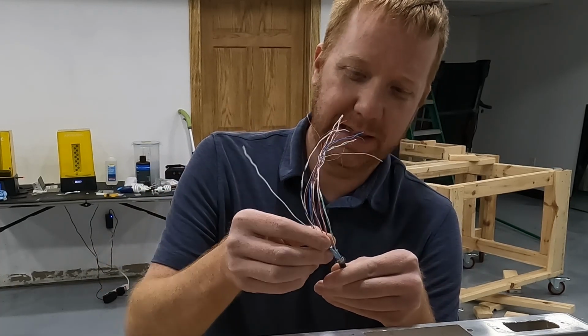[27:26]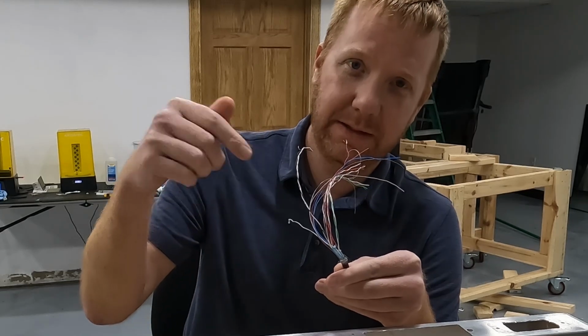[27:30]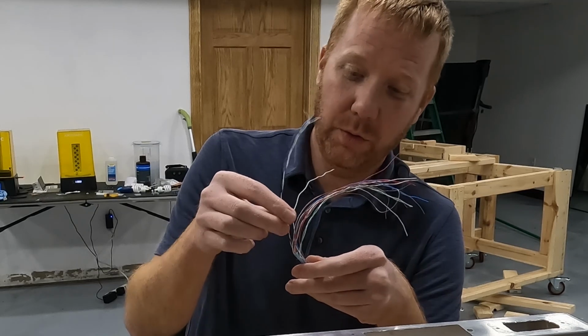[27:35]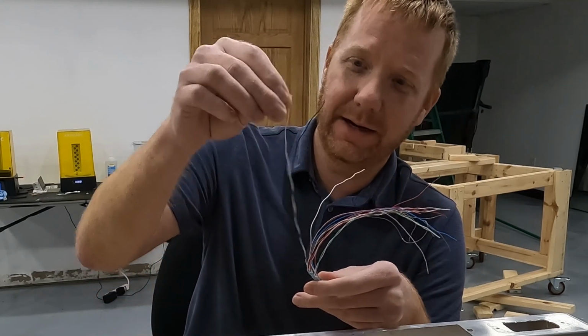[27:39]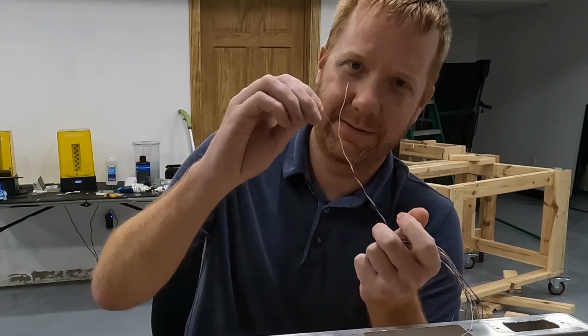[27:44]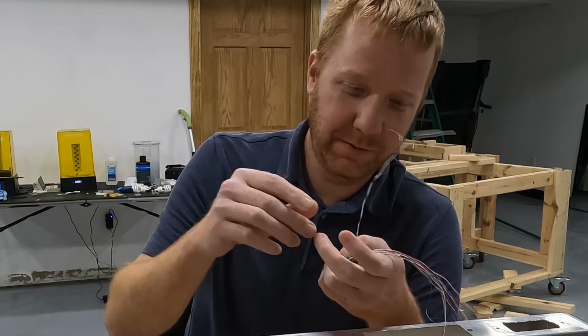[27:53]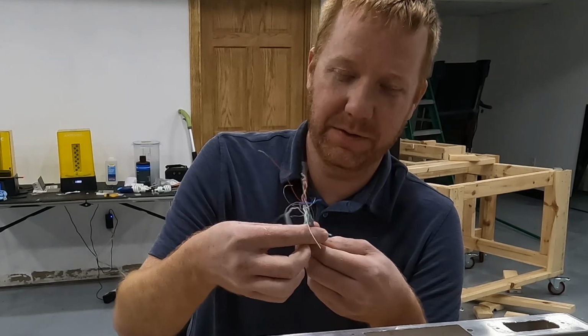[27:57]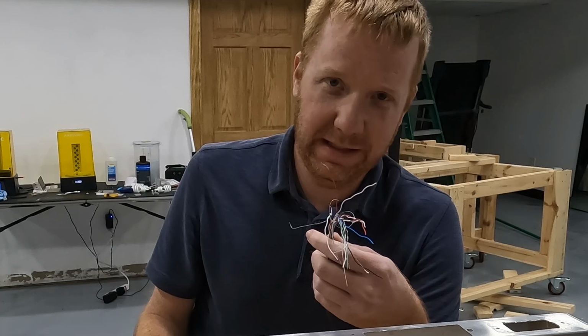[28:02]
However, when I was working a controller mod in parallel to this one, during that mod I cut an HDMI cable in half, and I learned all kinds of things. There are 20 wires inside of an HDMI cable, but the HDMI cables are heavily shielded, so there's a lot of aluminum foil type material that the wires are wrapped in. There's several twisted pairs that are individually wrapped in foil, and those twisted pairs have an uninsulated wire running alongside of them. And that's all well and good, except each one of those uninsulated wires counts as a pin. So there's like 4 or 5 of those, which means that, assuming there's 5 of them, there's 15 insulated wires.
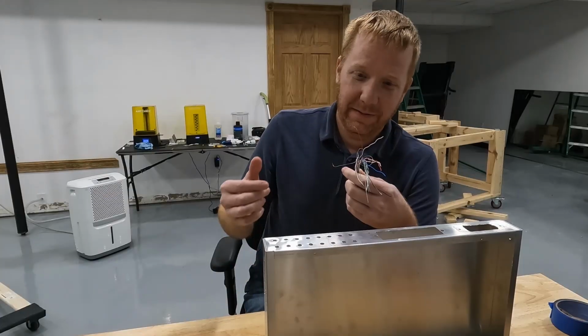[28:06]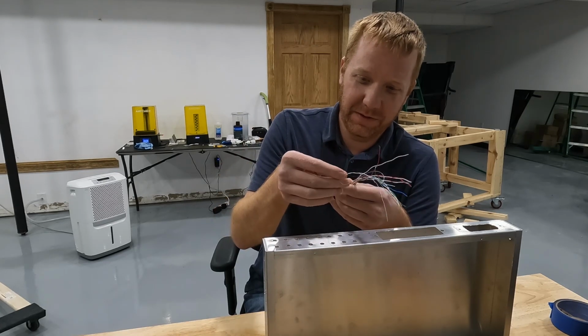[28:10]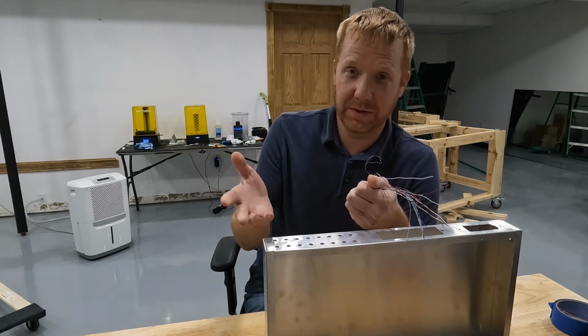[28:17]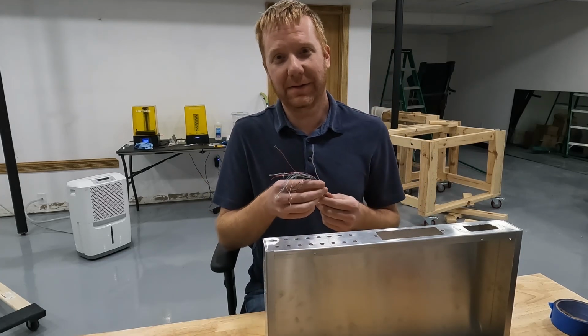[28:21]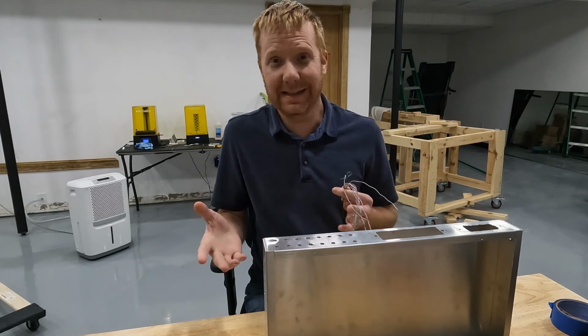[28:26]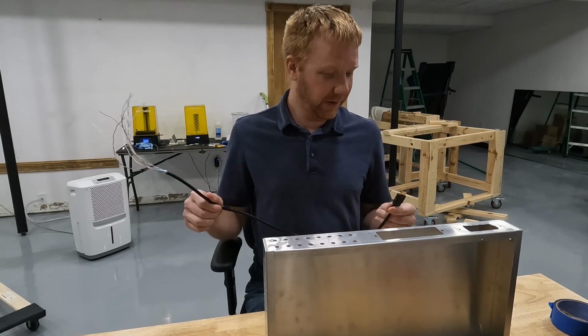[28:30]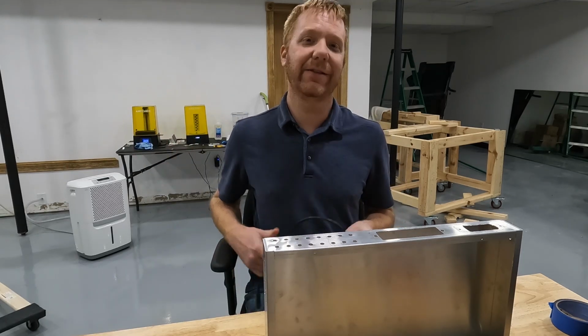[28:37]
For what we need, all the wires need to be insulated, because if the uninsulated wires are touching ground or whatever, those are going to short out. And it's not going to cause a fire or anything, but it is going to cause our controller to do things that we don't intend it to do. So, as a result, the whole HDMI concept is just not going to work, and we're going to throw it in the trash.
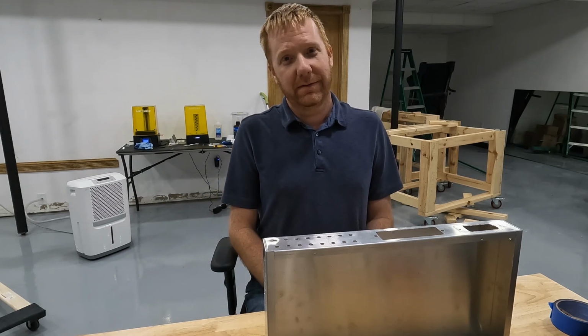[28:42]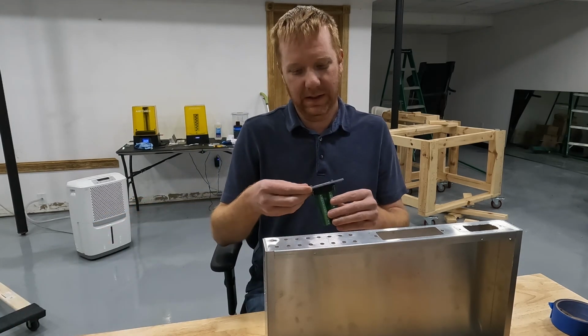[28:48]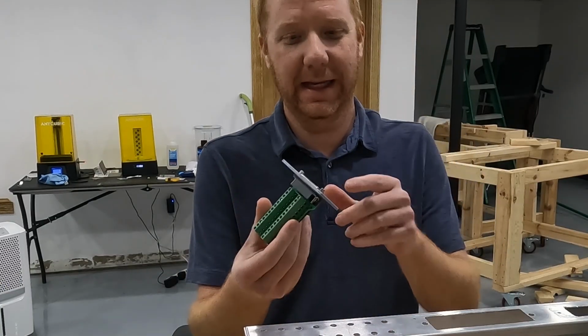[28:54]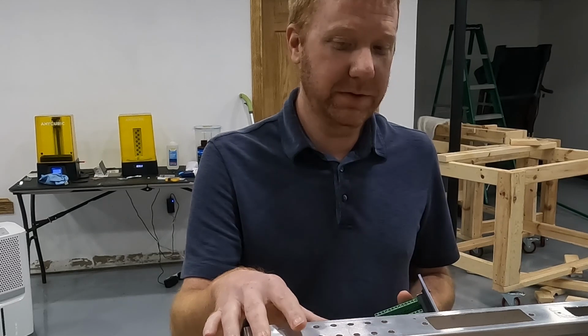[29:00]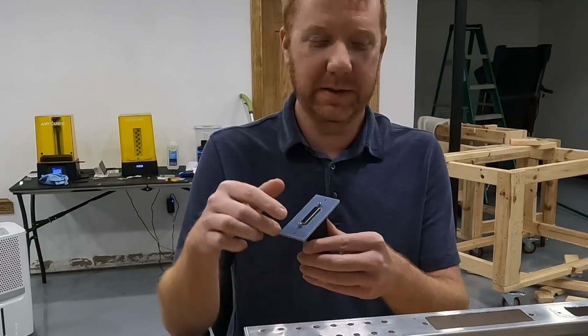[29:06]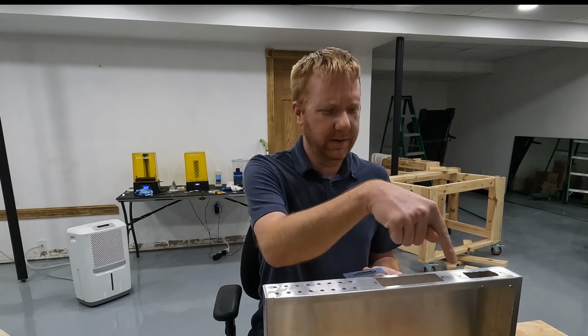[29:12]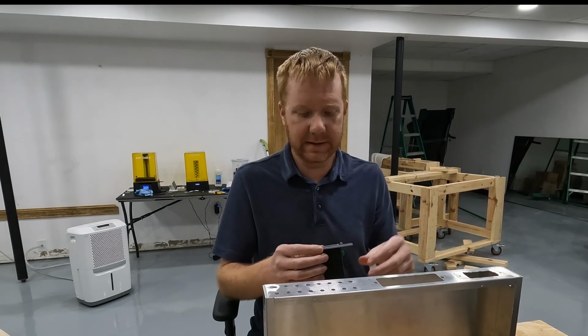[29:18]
I had to go back to the drawing board, figure out a different solution, and I did come up with one. So instead of the HDMI concept, we're going to use a D-sub 25 connector. And I've already 3D printed a new faceplate. Now, I've already cut my holes in my box, so I have to make do with what I have. So I used a 3D printed faceplate, which is probably the easiest way to do it, but had I not already cut holes that I have to accommodate, you could potentially mount it directly into the box itself, or create another piece of sheet metal and stamp it out.
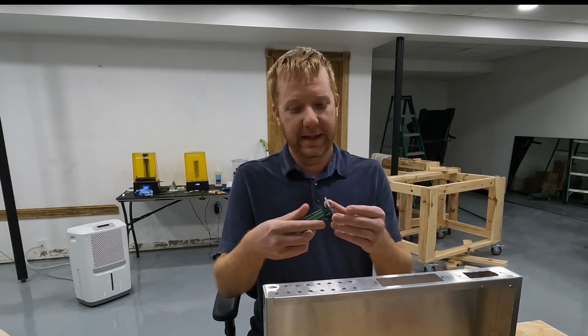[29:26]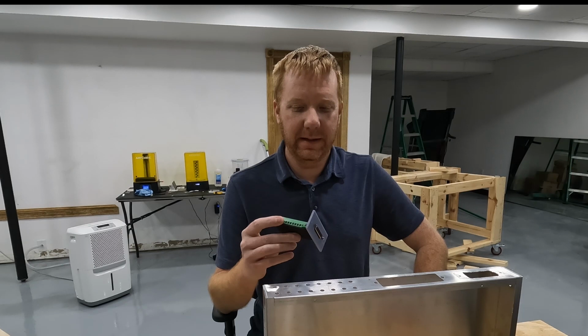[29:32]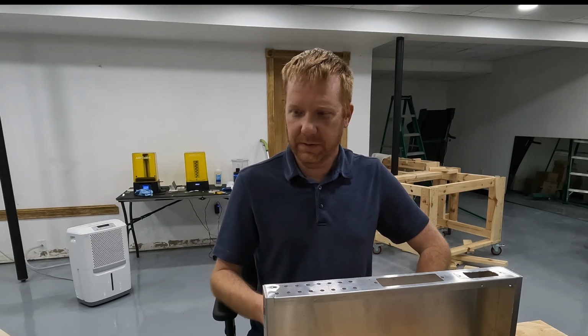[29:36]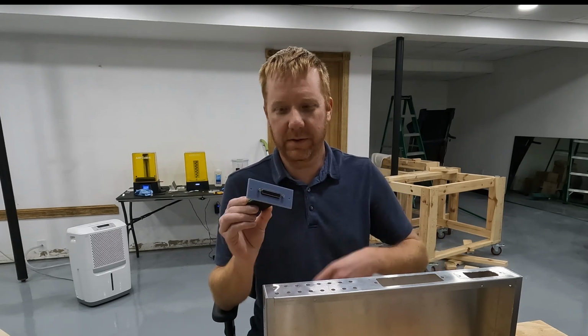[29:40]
Anyway, I got that figured out. I bought this off of Amazon. It's a little bit more expensive than the HDMI one I had, but not unreasonable. And then I also got a cable that goes along with this.
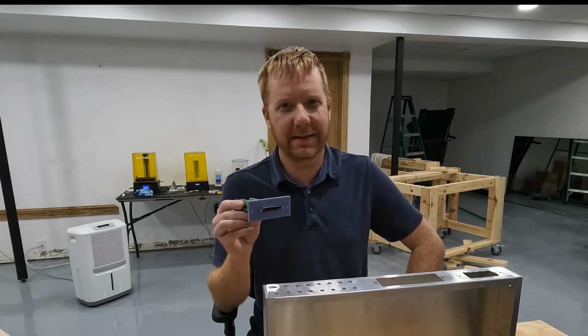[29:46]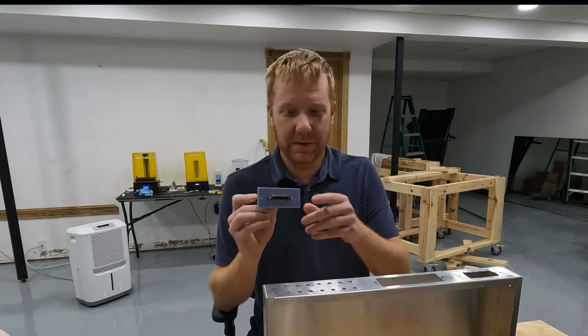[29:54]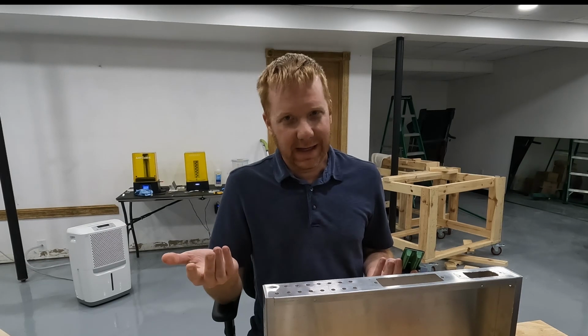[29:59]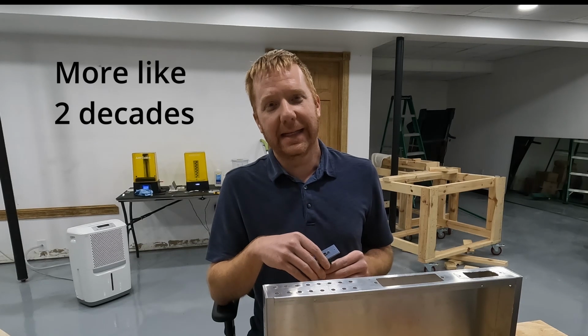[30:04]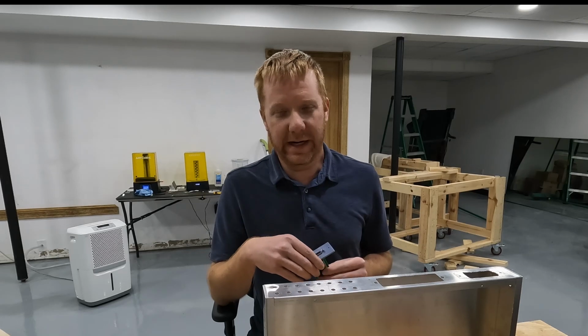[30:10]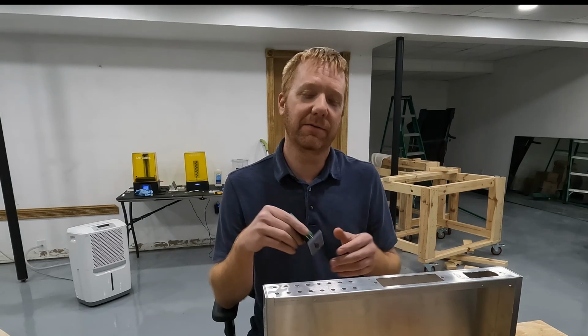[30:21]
So these are, I don't want to say obsolete because people still do use them, but you used to see them a lot more often on old school printers, used connections like this, anything with old analog signals. In the past decade or so, everything has switched to USB, which is a digital signal, and HDMI is also a digital signal, which is why it's very shielded and the wires are smaller. So switching over to this connector is actually probably smarter. I mean, it's intended to be used for what we're using it for.
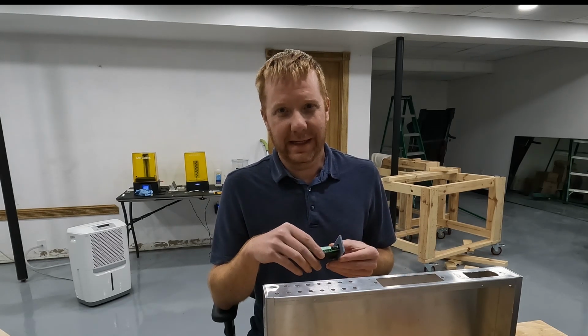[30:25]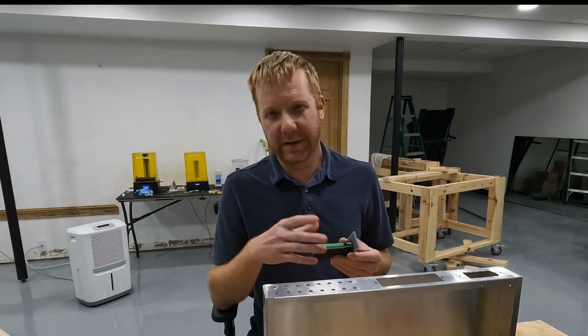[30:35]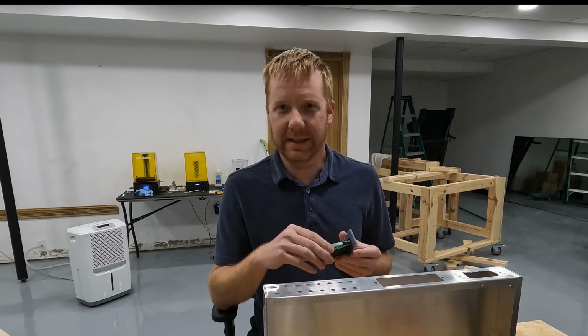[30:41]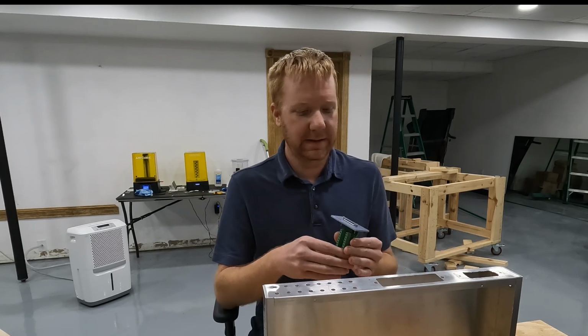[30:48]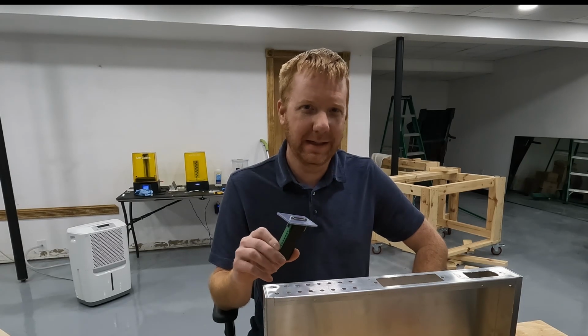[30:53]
The downside is you probably don't have a cable like this laying around your house. I mean, I didn't, and I have all kinds of computer crap sitting in my closet. So I had to buy one. Fortunately, the cables are readily available, and they're about the same price as an HDMI, so it's not too bad. It's just not what I originally intended. It's also bigger, so an HDMI cable would have been a lot smaller in our box. This is quite a bit wider, and it doesn't look as sleek and pretty, but in the long run,
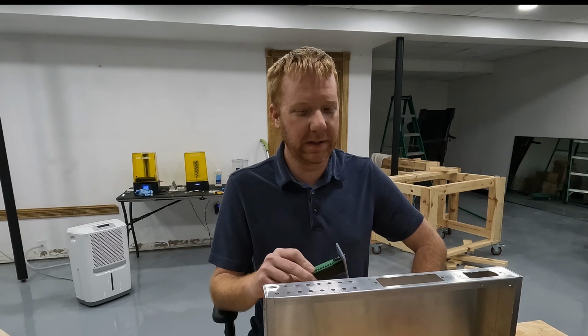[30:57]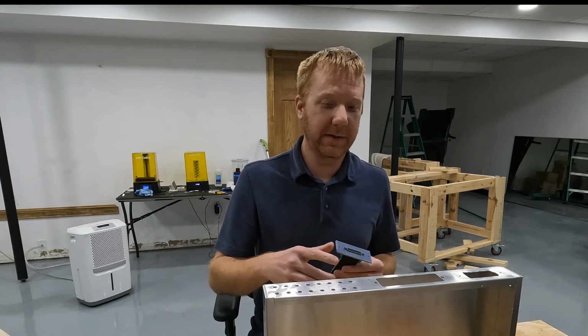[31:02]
it's probably a better solution. So I'm gonna mount this guy in the box now, and then we've got our Cat 6 connector Keystone mount thing. We got to get that mounted in, and then I'm gonna start mounting the things that the joysticks plug into.
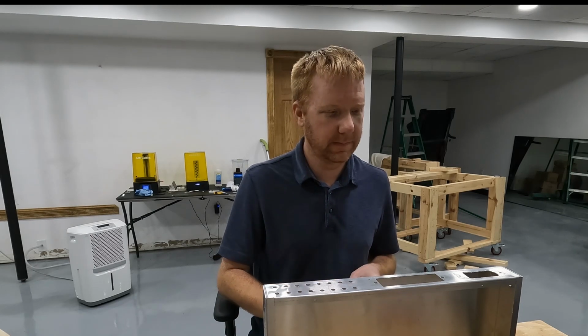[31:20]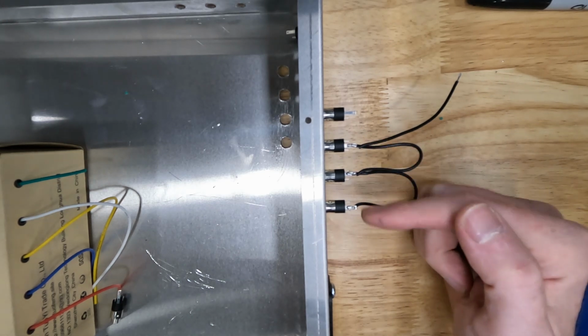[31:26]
All right, I've got a couple or 3 of my 3.5mm TRS jacks in place, and I'm starting to solder ground wires to them. I wanted to take this opportunity to show you what I meant by daisy chaining the ground wires. So we don't need to run individual ground wires from every jack to our D-sub connector. We just need to connect all the grounds together on all of these jacks, and this will continue on through all the jacks that we have in the box.
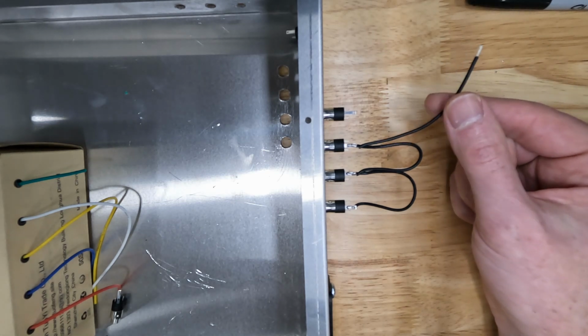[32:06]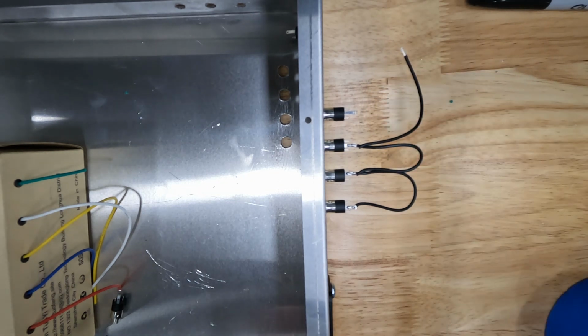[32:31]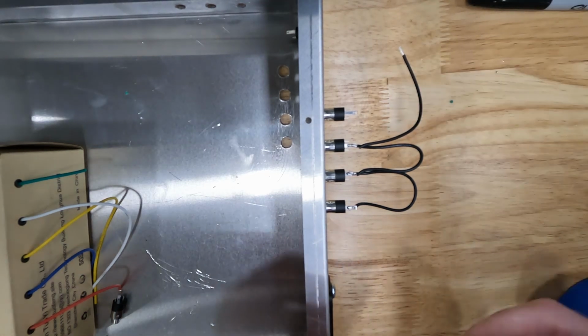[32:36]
And then when we're done, we will take the remaining wire and run just that one wire to the D-sub connector. If you're trying this for the first time, you've never soldered before, don't get frustrated if it's not working for you the first time. It took me several tries in order to figure it out, and I'm still learning myself, but it just takes practice. But I did want to show you kind of the method I'm using to put these together. It seems to be working okay.
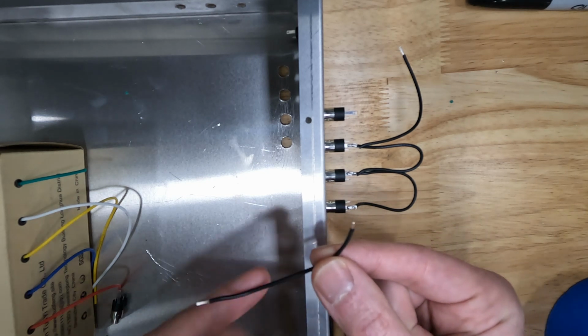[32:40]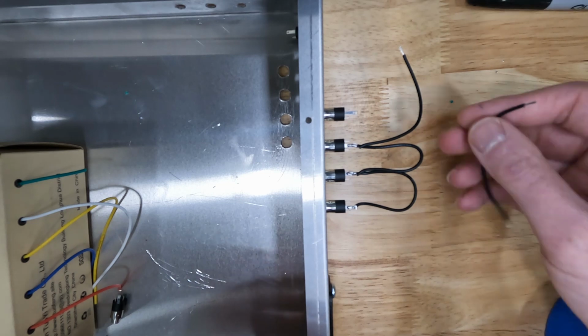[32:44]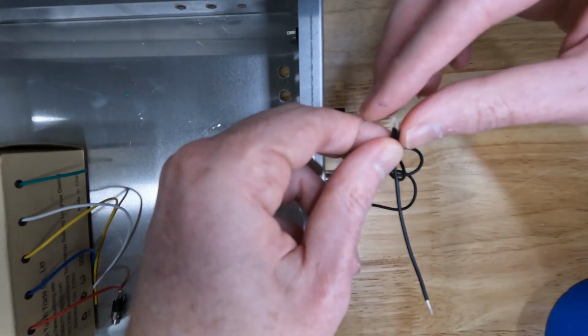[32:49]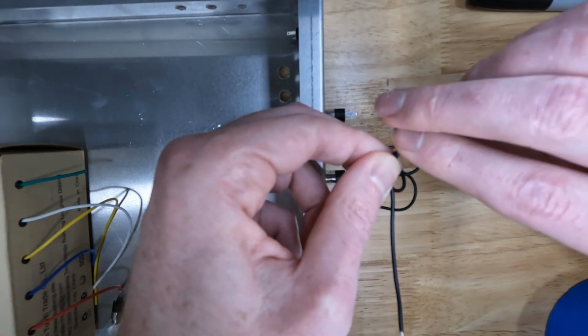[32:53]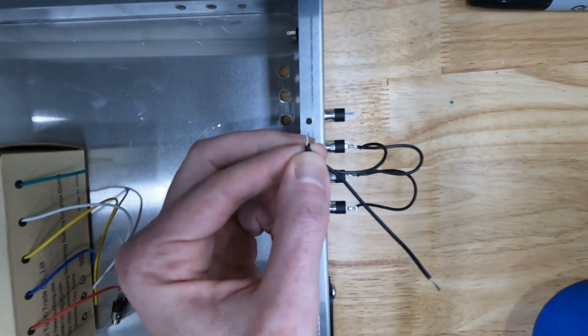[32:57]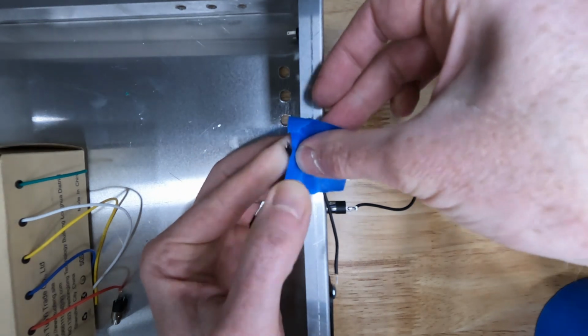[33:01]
I pre-cut little strips, they're all the same length, and I went ahead and stripped each end of the wire. And I'm just going to take the 2 wires and I'm going to wrap them around each other and kind of twist them. Now the wire isn't very long, so you're not going to twist it too much. And then just going to hold them down with a piece of tape, just like that.
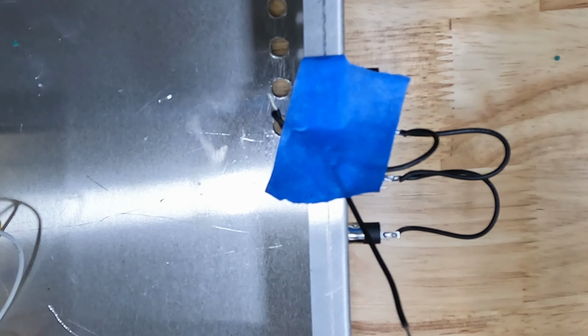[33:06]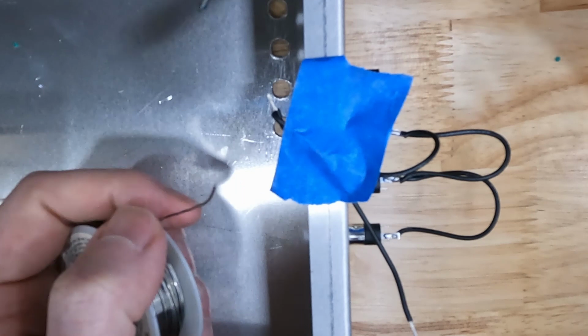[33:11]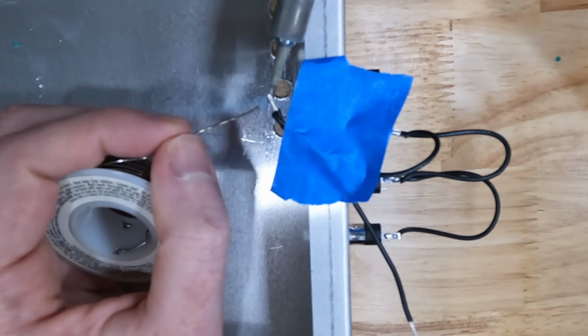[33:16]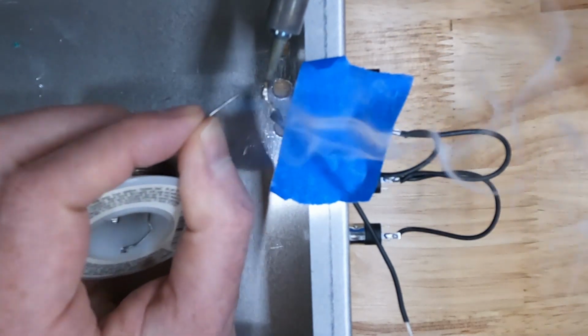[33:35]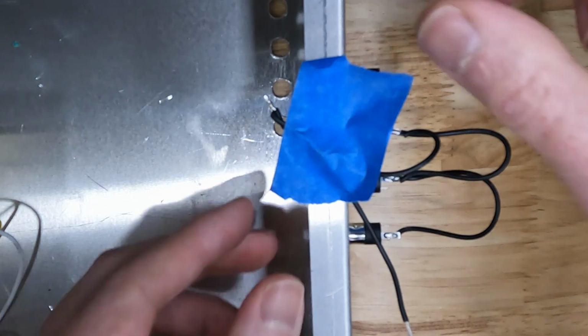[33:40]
Then I'm going to take my soldering iron and I'm going to hold it underneath of this bare wire. And all we're going to do is heat up that wire. I'm not putting any solder on it. And then I'm going to touch the solder to the wire. And once that wire gets hot enough, the solder is going to melt into it. See there? Solder is just going to flow right through that wire, and it's going to solder the 2 wires together. Okay, then we can take our tape off.
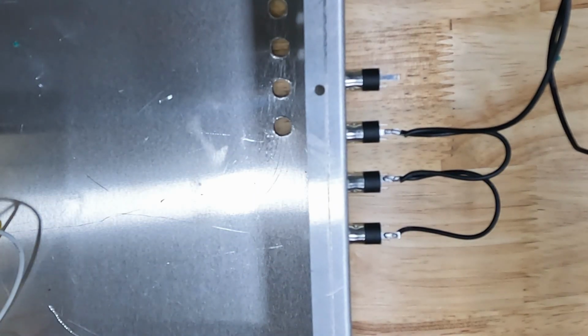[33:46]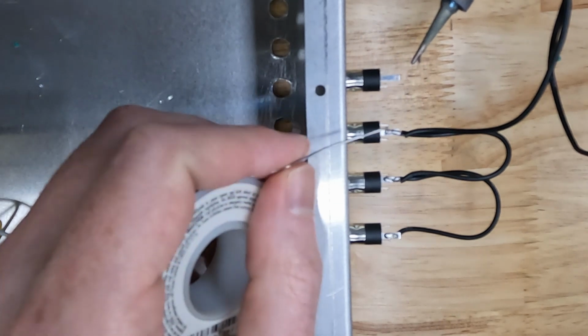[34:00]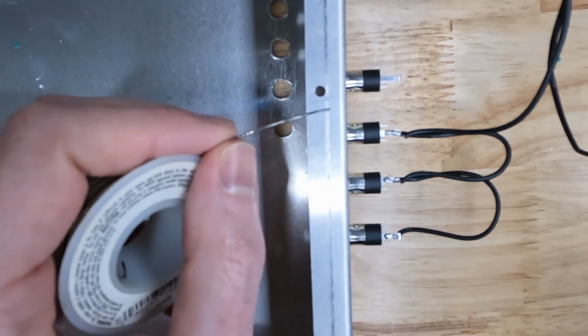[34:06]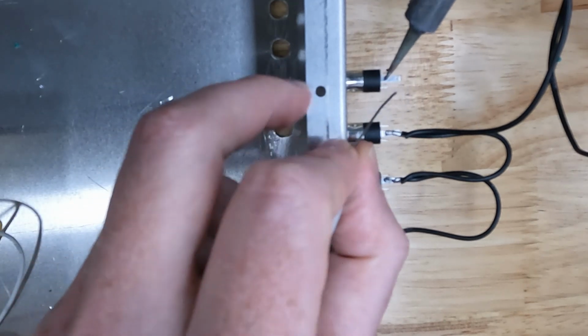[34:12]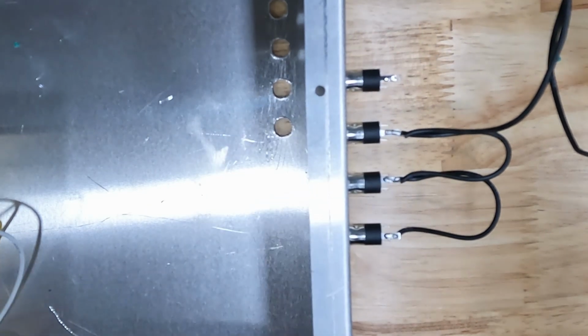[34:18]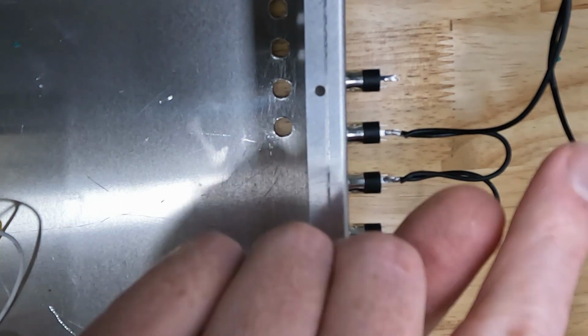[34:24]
And then I'm going to put a little bit of solder on my 3.5mm jack tab. So the long tab, at least on these jacks that I'm using, the long tab is the ground. So again, I'm going to put my soldering iron underneath the tab, or no, I'm sorry. I'm going to put the soldering iron on top of the tab, and I'm just going to heat it up. And then I'm going to touch the tab with the solder. And the solder is going to melt right on there and flow across the tab. And there you go. And then the last thing I'm going to do is take that twisted pair of wires.
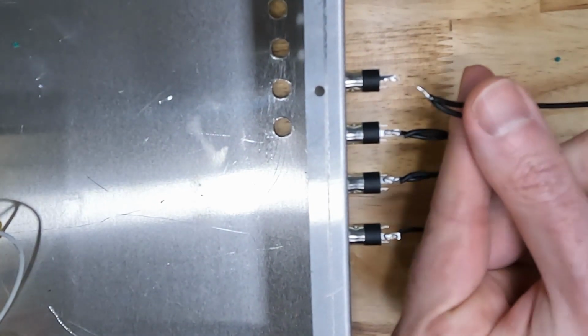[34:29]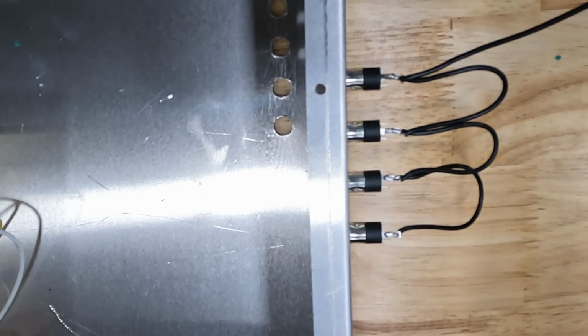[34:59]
I'm going to hold it on top of that tab that I just soldered, and I'm going to put the soldering iron on top of that wire. It's going to transfer heat through the wire down to the tab, and it's going to melt the solder together between the wires and the tab. So I'm just going to put a little bit of pressure on top of the wires, and it's all going to melt together. Then I'm going to lift up, let the solder cool, and there you have a soldered connection.
That seems to be working for me okay. I don't know if that's right or wrong, but if it works, then I go with it. So that's how I'm doing it. Feel free to do whatever works for you and let me know.
This was handy. I just installed the jacks into my box backwards so that I have access and the box holds everything in place. That's working really well. I'm going to continue doing this all the way around, and then I need to attach individual wires to the second tab, and each one of those wires will be the positive signal, and each one of those will run to our D-sub connector.
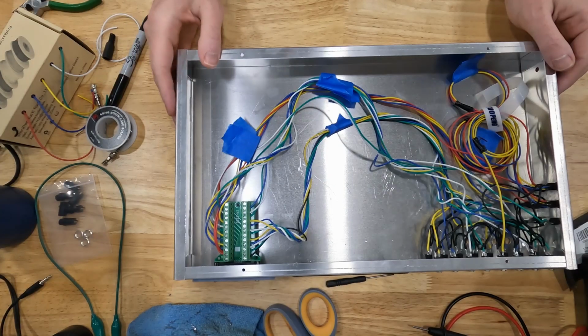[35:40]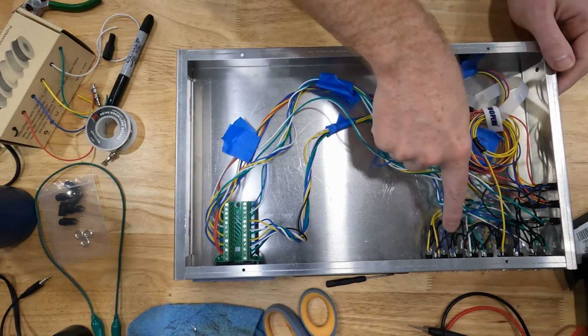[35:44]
Got some updates. I got all my wires soldered up. It's about 485 solder connections. I flipped my sockets over. So remember, I was soldering them on the outside. I flipped everything back over after I got them all soldered up. I'm only working with 5 different colors of wire, so I did try to do it somewhat smart. I did green wire, white wire, blue wire, yellow wire, green wire, white wire, blue wire, yellow wire. And then I ran all my wires to my D-sub connector breakout board, and I bundled them.
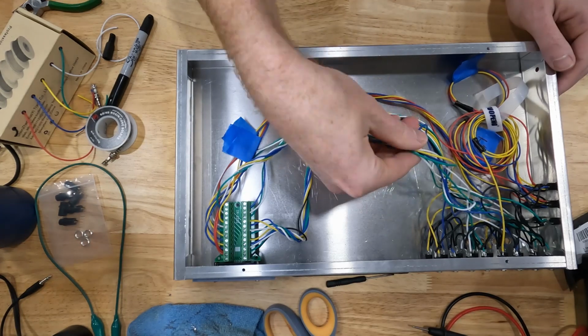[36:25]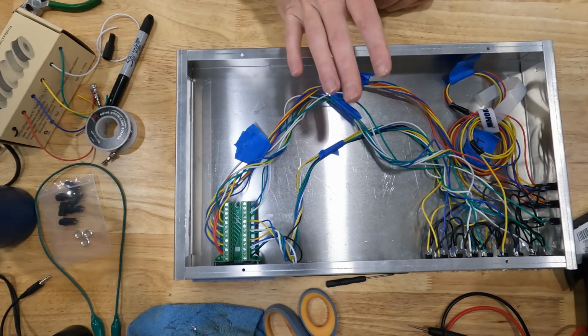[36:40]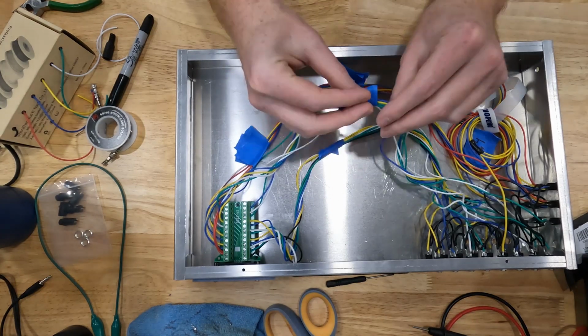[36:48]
I twisted them together just on rows. So this bundle right here is the top row. This bundle right here is the bottom row, and then this bundle over here is my analog signals. I'm doing something that I've never done before, and that's trying to keep my wires somewhat clean. And then I just taped them together to keep the bundles together. Now I do have some tie down straps that I'm going to put in here to keep everything in place.
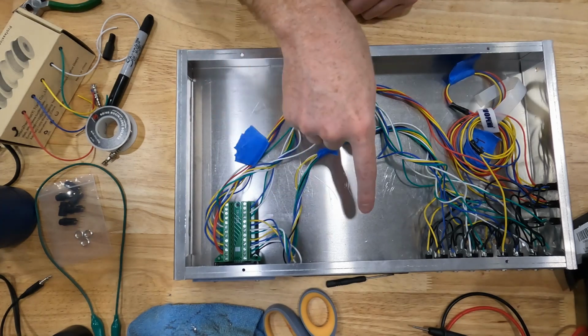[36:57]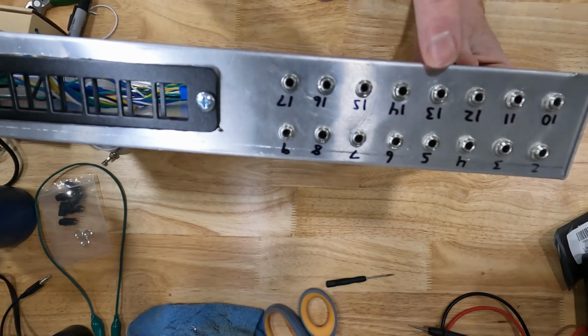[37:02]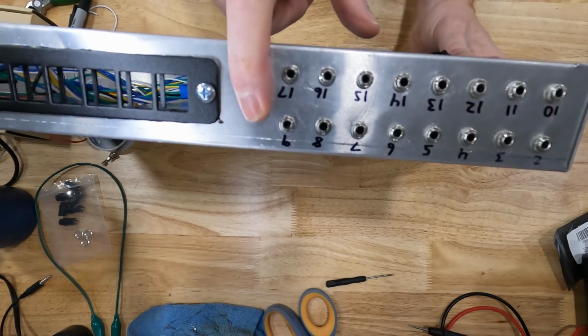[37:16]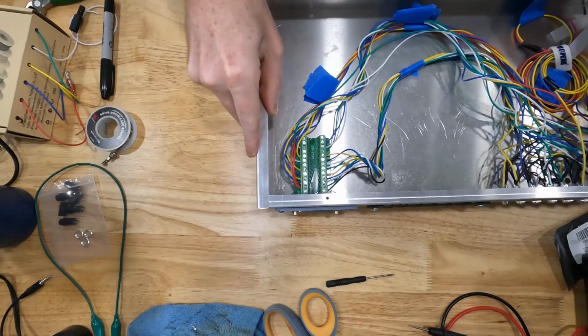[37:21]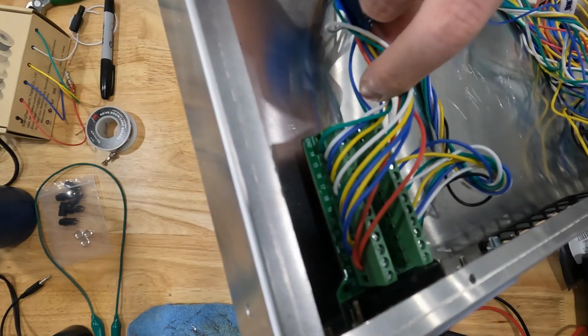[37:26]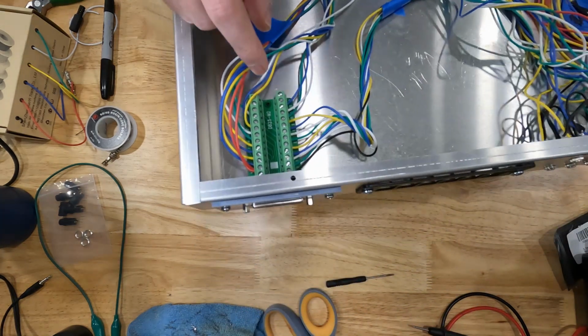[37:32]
I also numbered my pins, starting at 2 because my D-sub connector pin number 1 is ground, so we're not using it for any signals. So these numbers correspond to the pin numbers on my D-sub connector, which are labeled here. Underneath these wires are numbers, and those numbers correspond to pin numbers on the D-sub connector itself.
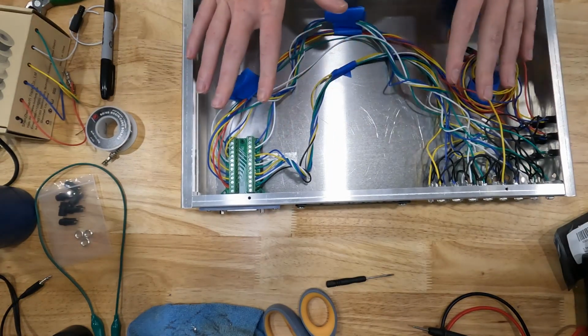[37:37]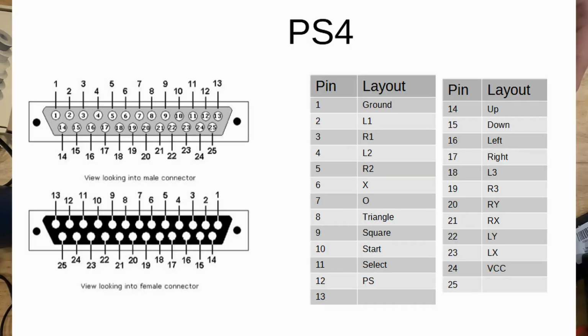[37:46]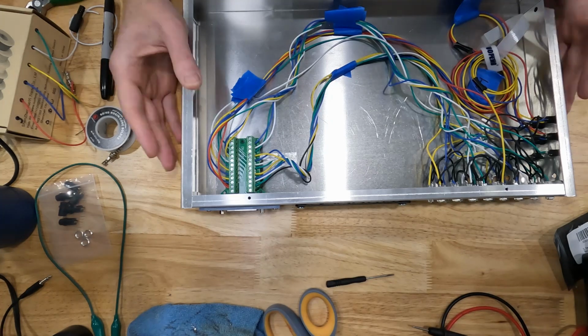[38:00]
So I diagrammed all of this. I figured out what all the controllers are that I want to work with. Basically, I took the PS4 controller, laid out what pins I needed for that one, and then all the other controllers fall out of that because the PS4 controller has the most signals coming out of it, so I needed to accommodate that, and then the rest of them are easy. It doesn't really matter how you wire it as long as you stay consistent. So I didn't pick pin numbers based on anything intelligent. I kind of randomized it.
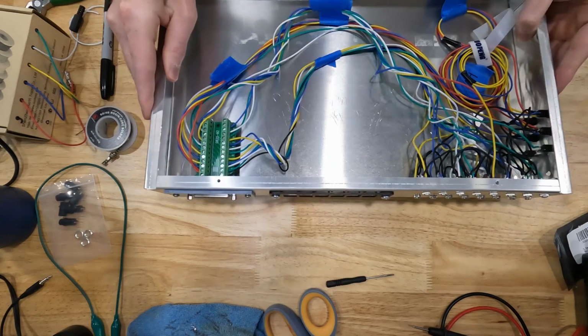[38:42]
I did try to keep the D-pads, directional pads together, like up, down, left, right. Those 4 are in a row here. For the PS4, the X, square, triangle, circle, I kept all those together. So I did kind of try to make it smart, but other than that, it doesn't matter what pins you use. Just record what you do so that when you wire up the interfaces, you can be consistent and you get what you need.
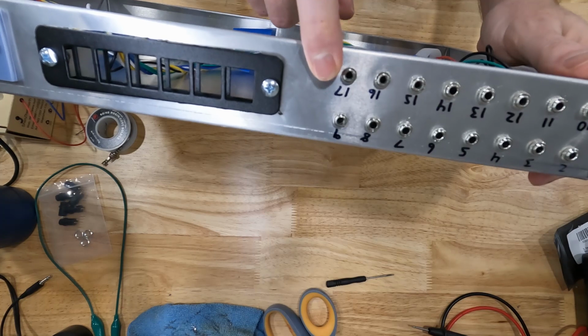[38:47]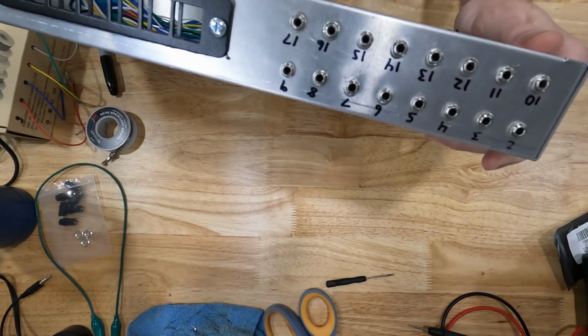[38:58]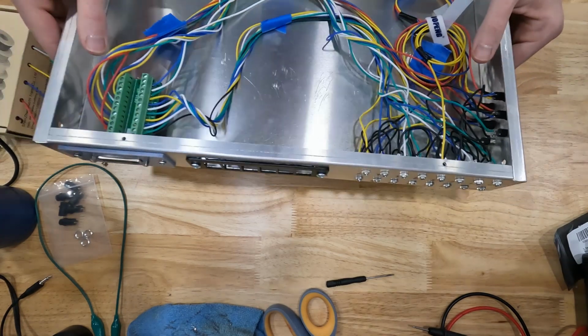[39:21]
Now the numbering that I showed you, this numbering here, eventually maybe we'll do something smarter, but like in the case of the adaptive controller, when you're only doing one controller for Xbox, you can label them up, down, left, right, start, select, X, A. I don't know what all the buttons are on a Xbox controller, but it's easy to do that. When you're making one controller for a bunch of different gaming systems that all use different button names, that makes it much, much more difficult. That's why I just went with the numbering system, and then later I might think of something more clever.
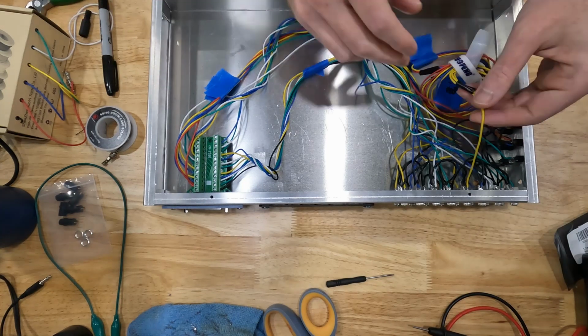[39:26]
I did have an extra pin, so we're only using 23 out of the 25 pins on our D-sub connector. I kept pin number 13 blank for some reason. So that extra wire here, I just grouped in here. I also added 2 extra analog signals that are not needed, and we don't have enough pins over here to accommodate them.
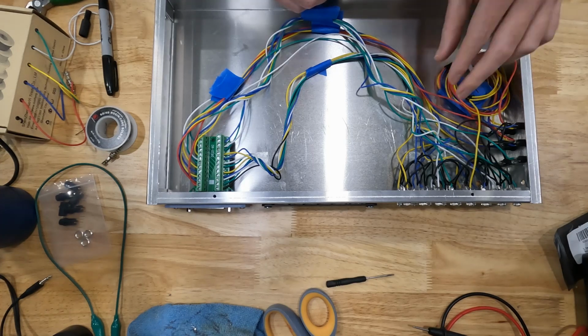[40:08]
I did that just for future use. I'm not sure how this is all going to work, so I just added that now, and I bundled all those extra wires over here, and they're just going to be here out of the way. The other two analog signals run here, and that's going to be the left and right toggles on a PS4 or an Xbox.
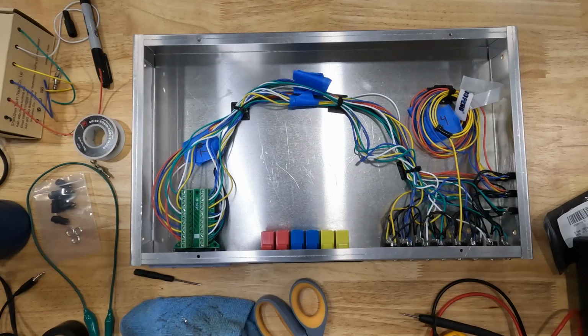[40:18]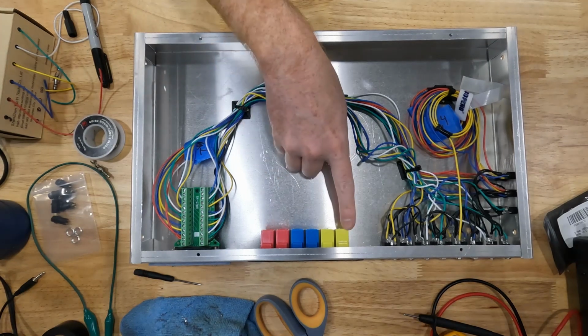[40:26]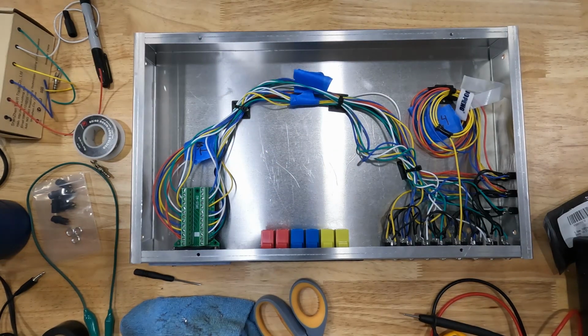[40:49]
Got the tie straps down, so I tied my cable in here so it's not flopping around so bad. And then I also added my RJ45 Cat 6 Keystone connectors in here. No, I'm not going to hook these up to anything right now. These are for future expansion, to try some new things in the future type deal. So right now we're going to leave these blank. I'm going to put the top on it, and then I think we're ready to try it out.
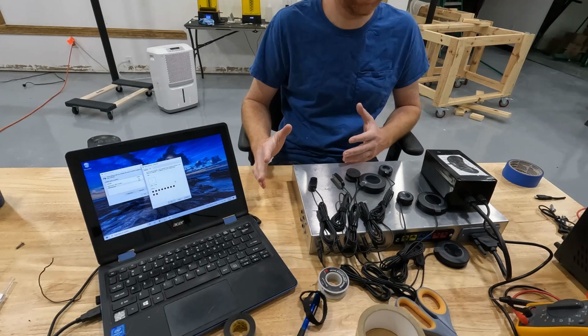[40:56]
I'm not sure the best way to record this. I'm no Spielberg, so I don't know how to show a laptop screen and what I'm doing here at the same time. So you're just going to have to bear with me.
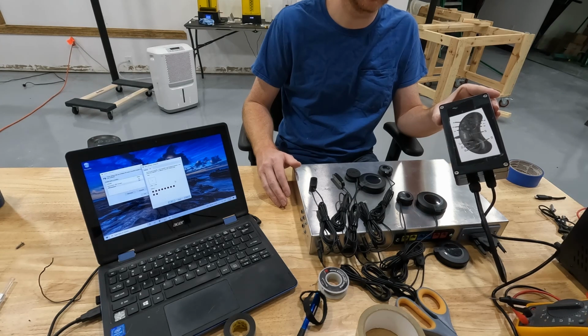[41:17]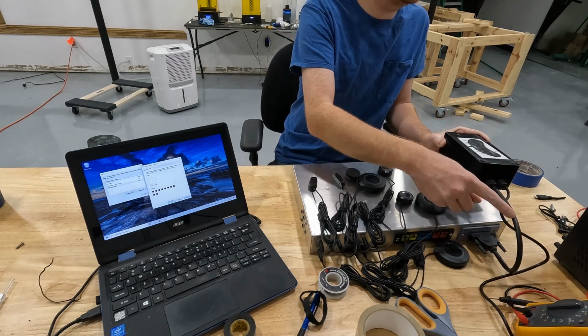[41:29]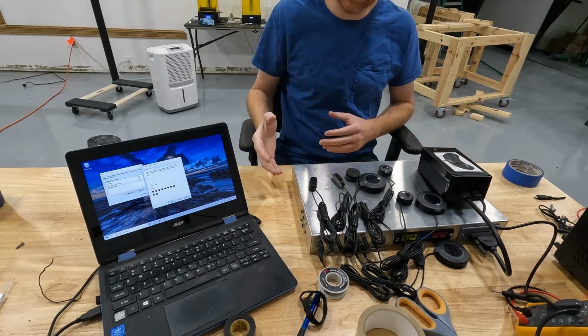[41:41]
But I got the controller all together. This is a Sega Genesis Mini controller interface box that we built in a different video. So if you want to see that, check it out. But inside of here is a Sega Genesis Mini controller that we hacked into, and then we ran all the signals out into our D-Sub 25 connector. And then the other cable coming out of that is the USB cable that would normally interface with a Sega Genesis Mini. But for testing, I want to use the laptop since it is a USB interface so I can see what's actually going on.
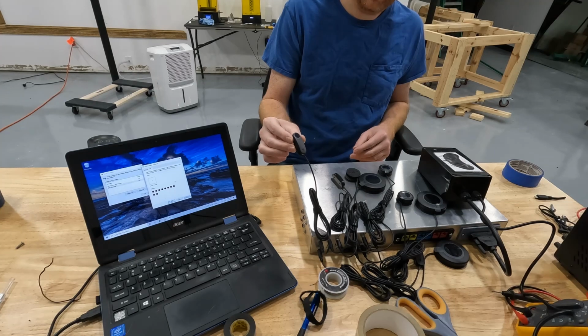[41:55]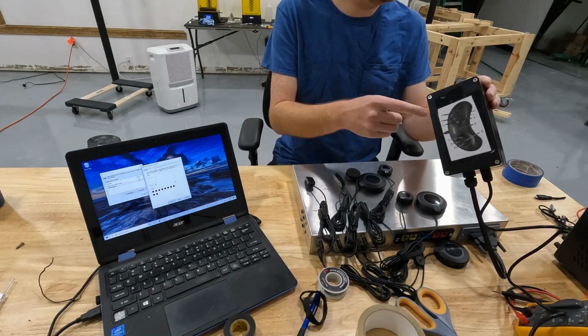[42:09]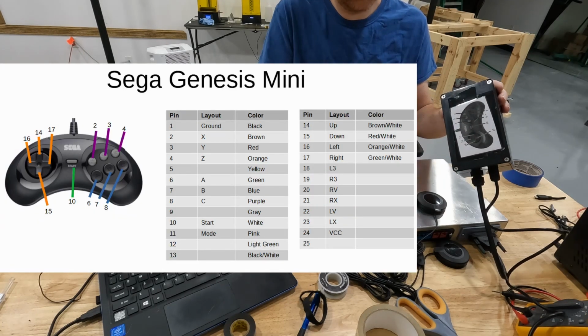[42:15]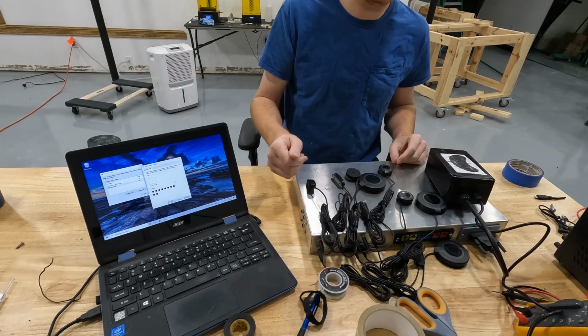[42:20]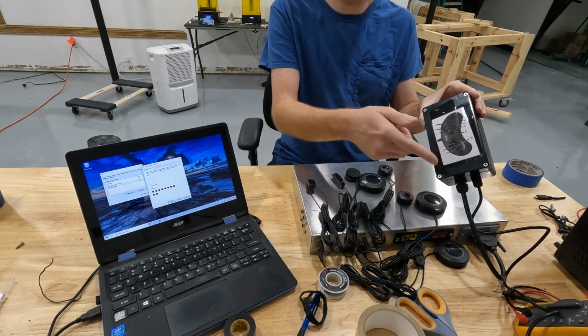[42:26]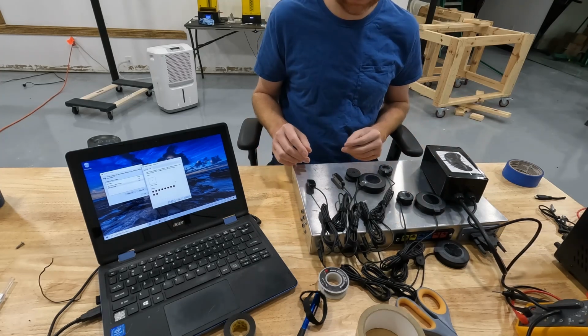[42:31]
And then I took all the Logitech adaptive controller buttons out of my adaptive controller kit, and I plugged those into the signals that are being used for the Sega Genesis Mini. You can see that I've labeled all the buttons that are on this controller with the pin numbers, so I just plugged in these switches to the corresponding pin numbers. Unfortunately, I don't have enough buttons to accommodate all the buttons on my controller, but that's okay. For this test, we just want to see that it's working.
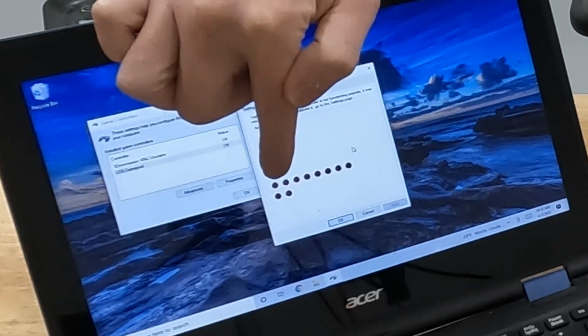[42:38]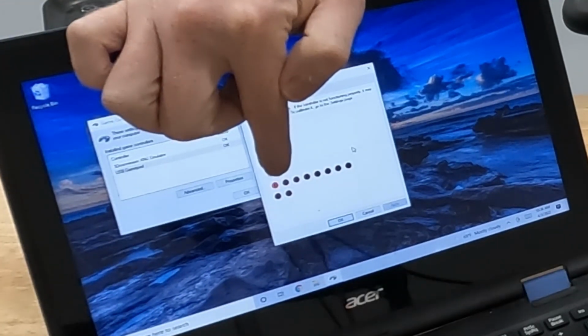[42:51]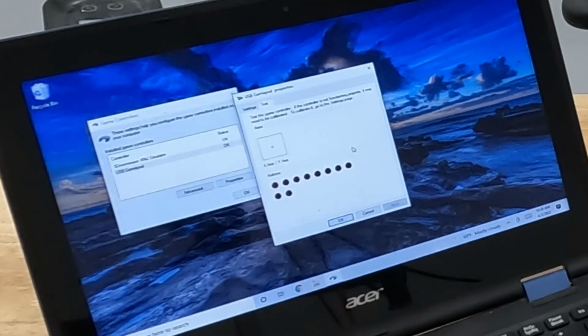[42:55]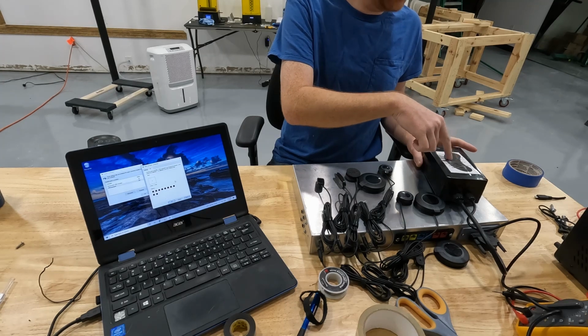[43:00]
So on my laptop screen, it may be hard to see, but these rows of red down here are the buttons that the laptop is seeing. So when I push one of these buttons, one of the buttons should glow red, and it is. So that button right there, when I press this button, is glowing red. So that's good. That means that the controller that we have in here is communicating with the laptop. We also know that the signals coming out of our controller into our D-Sub 25 connector is reading what we have in our box. So all is good.
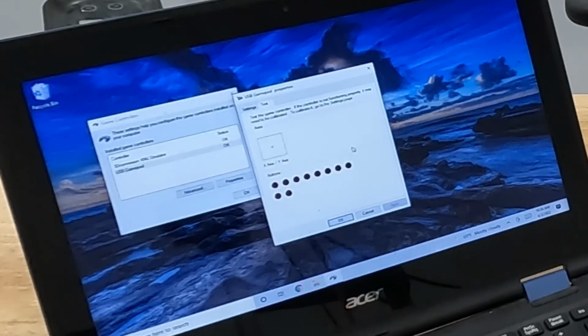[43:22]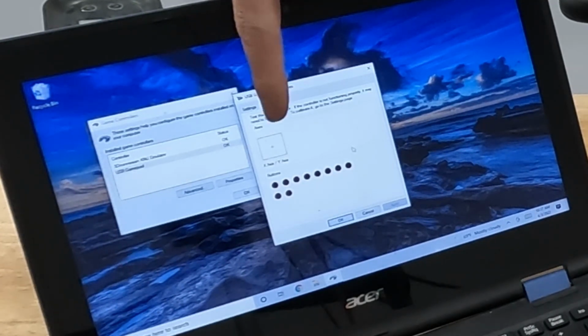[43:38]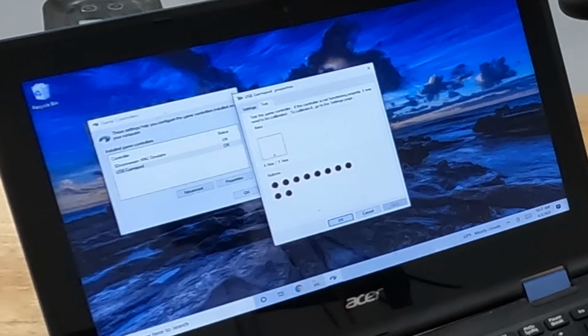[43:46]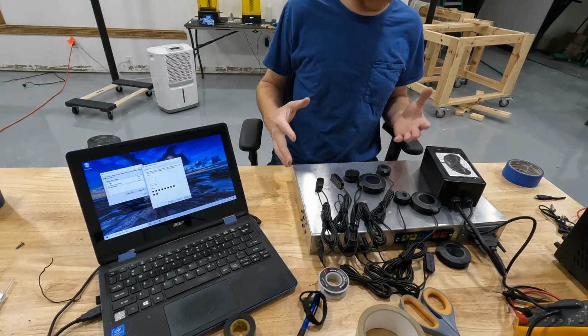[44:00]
So that button is working, that button is working, that button is working, that button's working, that button's working, that button's working. Oh, that's a directional pad. So when I push this button, that's the directional pad down. So my little arrow in this box is going down to the bottom of the box. So that's working. That's up. And then that's another button. So all the buttons that I have hooked up are working.
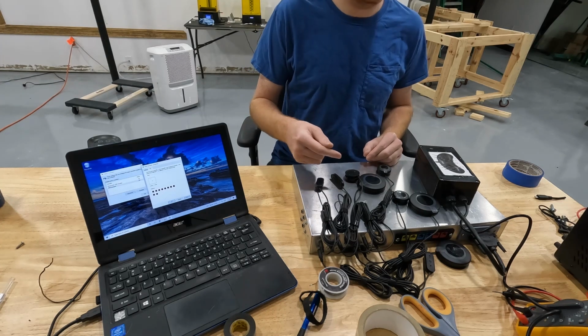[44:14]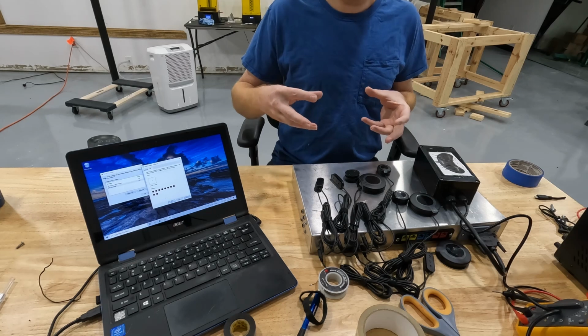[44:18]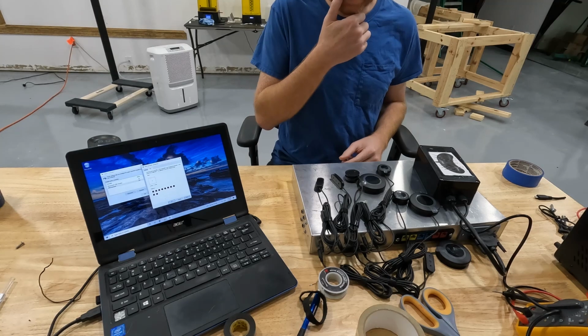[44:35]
That's all goodness. I did notice a couple problems when I was hooking this up. One, the D-Sub connector that I have coming out on my controller is not plugging fully into the female connector that we have on our box. And that's because the 3D printed panel that I made to mate it all together is too thick, and so it's not allowing the two connectors to fit completely like they're supposed to. However, they are plugged in good enough for it to work, obviously, so that's good. So that's something that I gotta fix later.
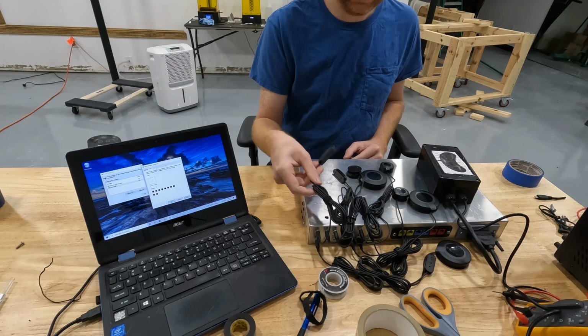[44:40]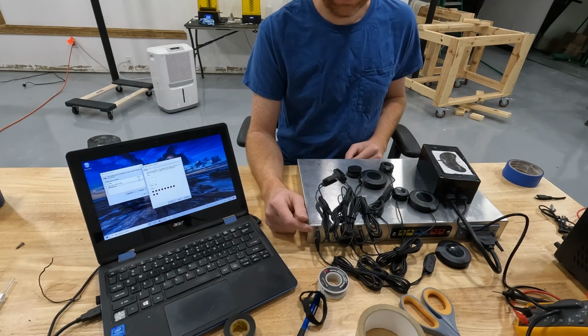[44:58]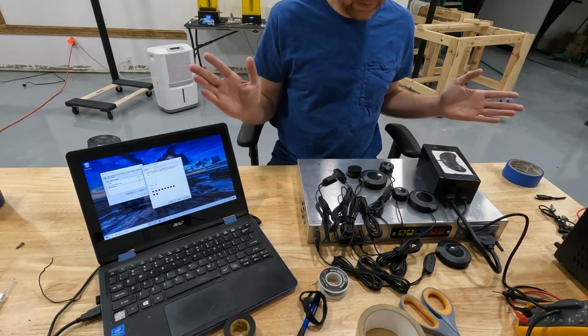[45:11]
I also had difficulty plugging in these switches into my audio jacks. The audio jacks that I'm using, I used the cheapest ones that I could find, and I'm starting to understand why they're the cheapest I can find. So in the future, when I build another one of these, I'm going to have to find better quality audio jacks. But for now, we're going to make do with what we have because this is just a proof of concept. So it's looking good. It looks like this is actually going to work.
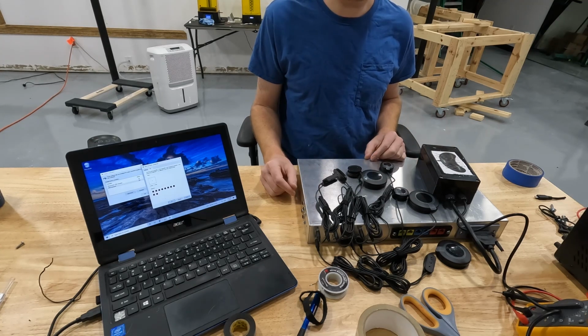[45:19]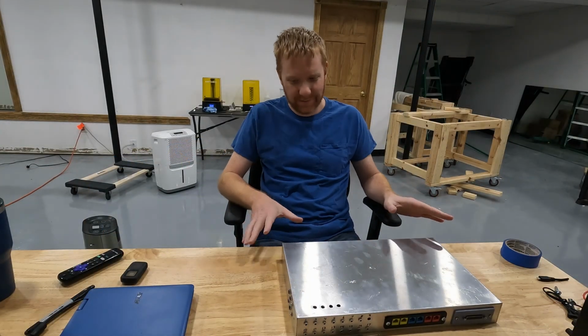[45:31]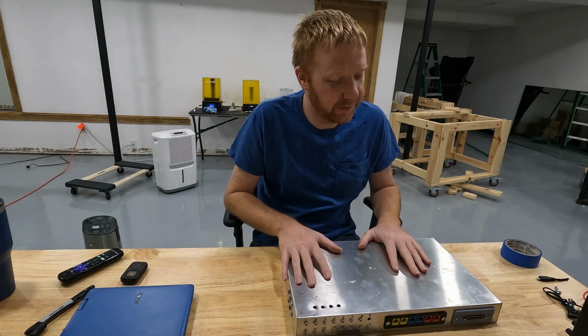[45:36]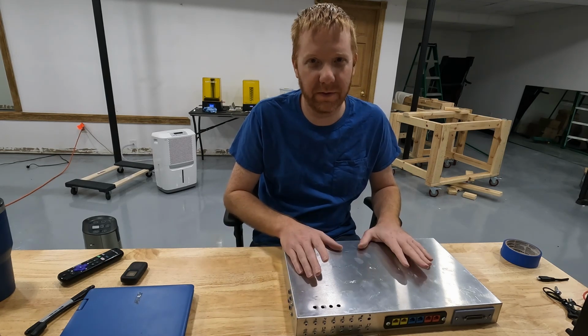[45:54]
Now I need to build other controllers so that I can test the analog functions and do more interface switches, and we got a lot of work to do. This is exciting. We've shown that the concept works, which is fantastic. We still have a lot of work to do. The next steps are to build more controllers. So I built a really simple one with the Sega Genesis Mini. I'm going to try that on the actual Sega Genesis Mini, but it should work. We proved that it worked on a laptop, so there's no reason that it won't work on the Sega Genesis Mini.
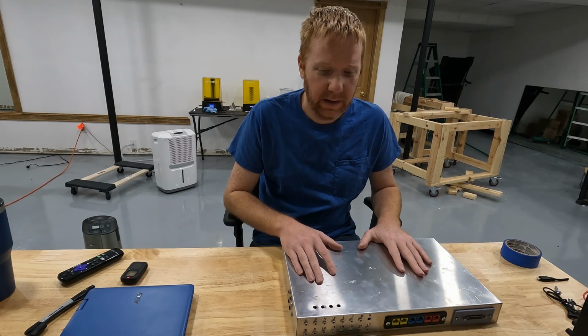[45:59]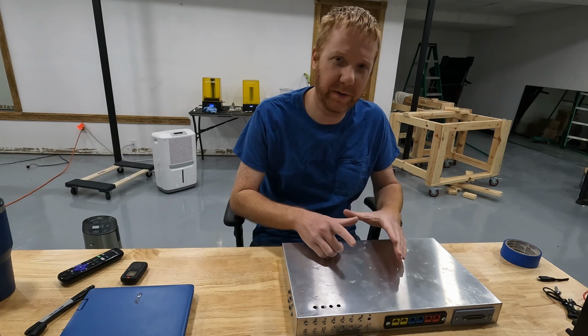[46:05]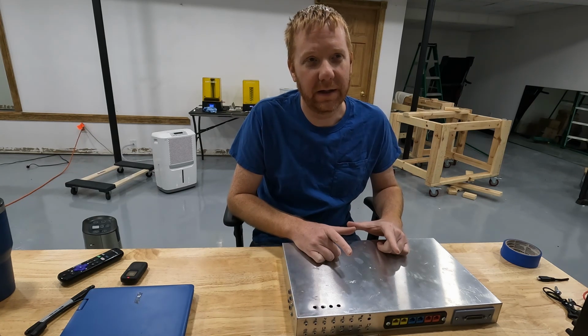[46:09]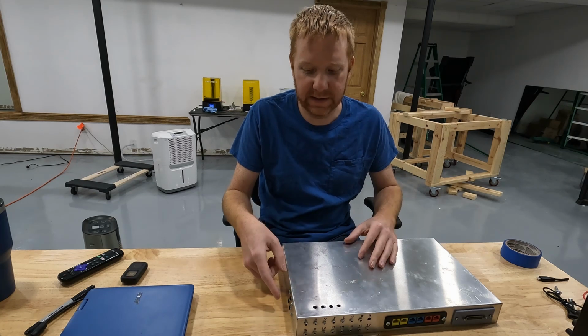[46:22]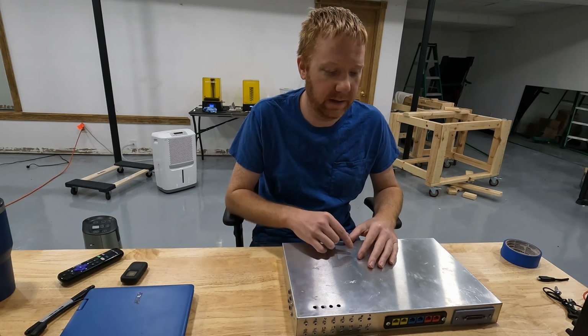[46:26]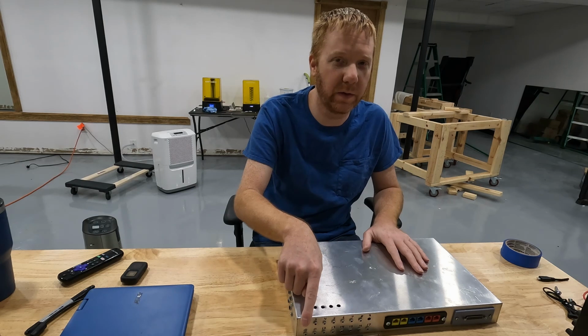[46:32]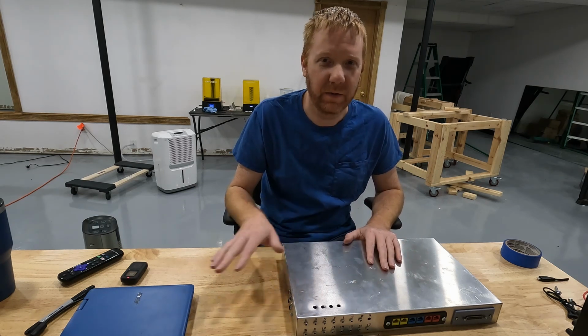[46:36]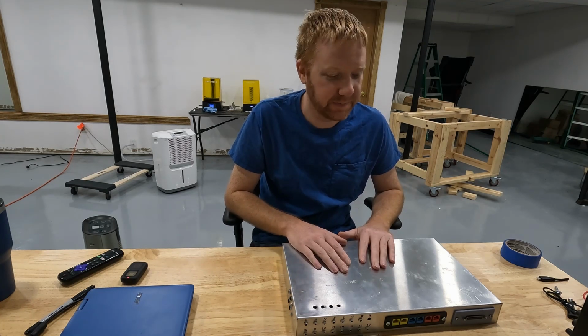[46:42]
The next step, I believe, I'm going to build another one of those boxes like I did for the Sega Genesis Mini, but use a Brook board instead so that I can connect to a PS4 and a Nintendo Switch and also a PC. And that's going to be more complicated. That's going to allow us to test the analog jacks, and it's going to pretty much use every connector across the board, so that'll give us a chance to test everything. We'll test that on the PC first, and then we'll connect it to an actual PS4 and go from there.
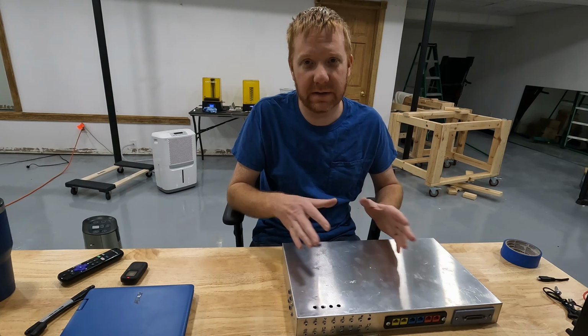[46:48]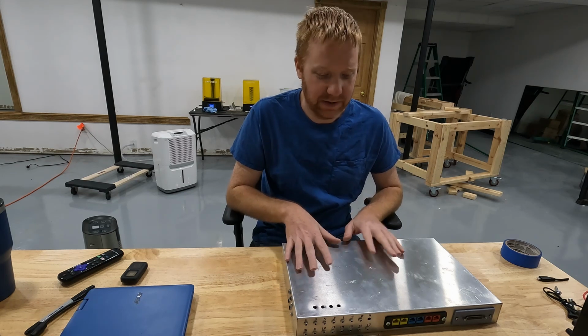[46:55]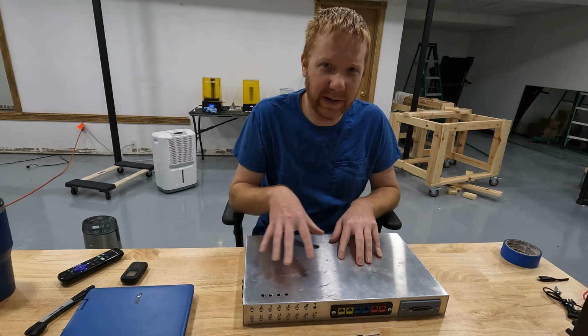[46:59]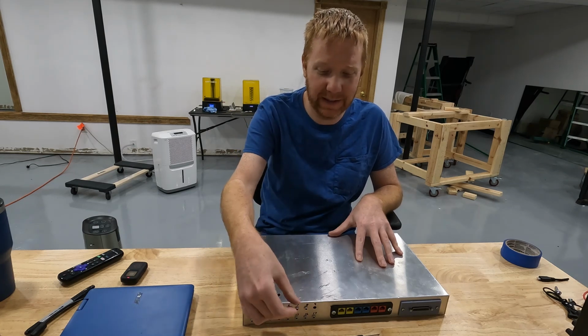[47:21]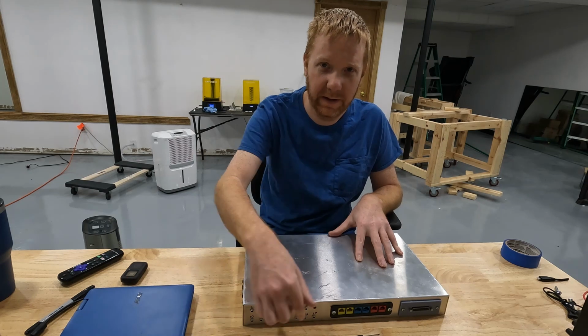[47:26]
The other things that I want to do is start building my own buttons and joysticks and different things that we can use to interface with this guy. Now there are some limitations, some differences between this controller and the Microsoft Adaptive Controller. From my understanding, the Microsoft Adaptive Controller allows different button mapping within software. So you can plug in your stuff and then you can map that inside the software to whatever you want. We don't have that capability here because that requires software, and there's no software inside of this box. It's very simple. You can kind of do that by unplugging buttons and plugging them into whatever button interface that you want to.
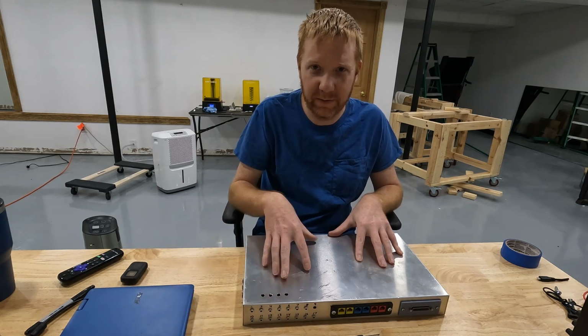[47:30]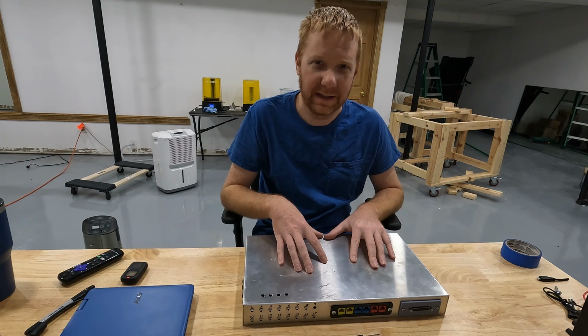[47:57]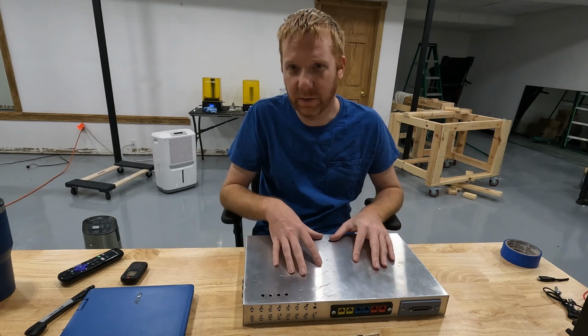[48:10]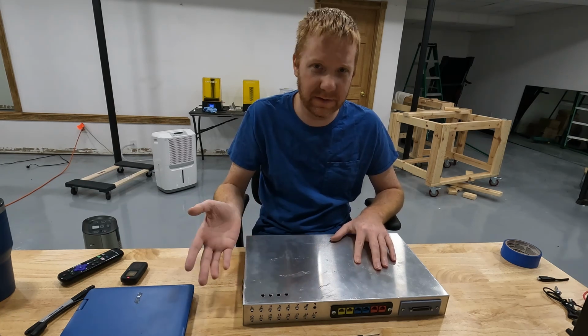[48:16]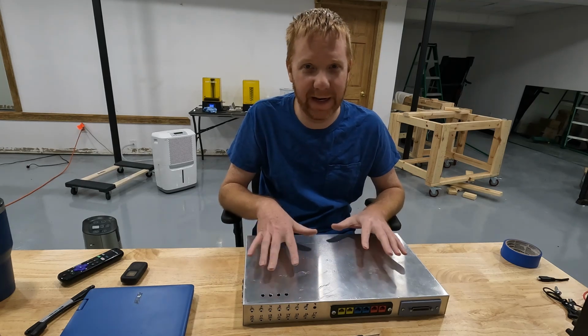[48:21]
You can remap them that way, but I understand that that's more difficult for disabled people, plugging and unplugging, so I get that. That's something that we could potentially add in the future. It's going to add complexity and cost. I'm not sure I see the complete advantage there because I think, and I could be wrong on this, but I think the later systems allow you to remap buttons inside of the gaming system itself. I know PC you can do that. I thought you could do that on Xbox, and I thought PS4 could also do that. So that's something to consider. Now obviously the older systems, that's definitely not an option, like the Nintendo and Super Nintendo and the Sega Genesis Mini. Those kind of systems never had button remapping.
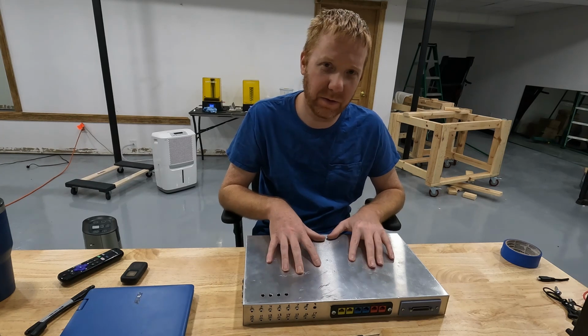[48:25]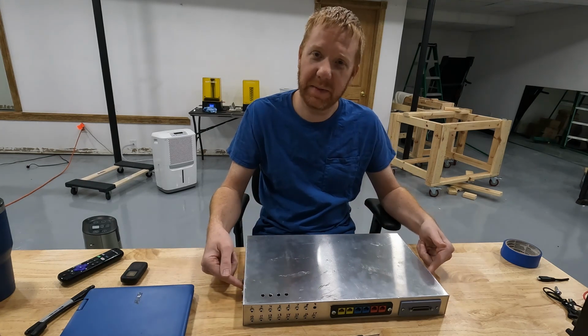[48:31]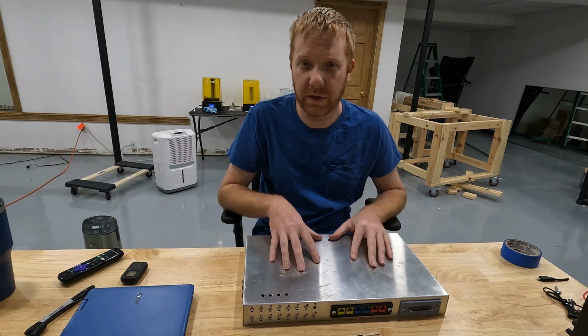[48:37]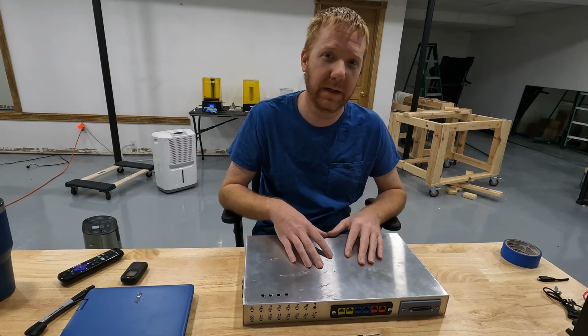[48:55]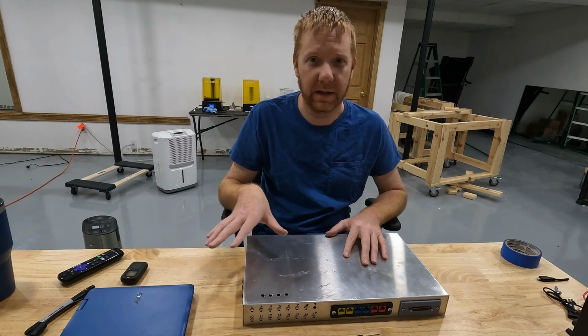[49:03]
The other thing that this controller doesn't have, on the Microsoft Adaptive Controller, there are two USB interfaces that allow you to plug in any USB joystick and use those. Again, that requires software, which we do not have in this system. I am going to build some joysticks that we can use. So I guess the big limitation there would be if there is an existing joystick that is really helpful to you that's a USB interface, we won't be able to use that. However, if you do use a PC, I'm pretty sure that you can plug this controller into the PC and also a different joystick if you have multiple USB ports, which you most likely do, and then you could use those together. Not 100% sure, but it's something that you could try.
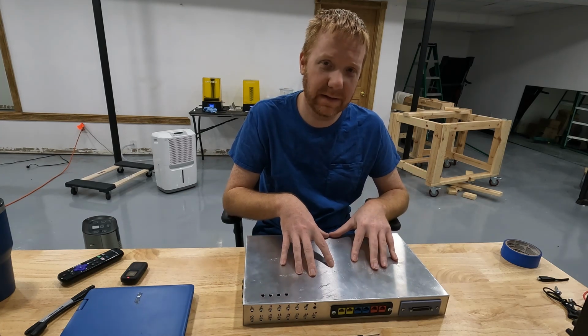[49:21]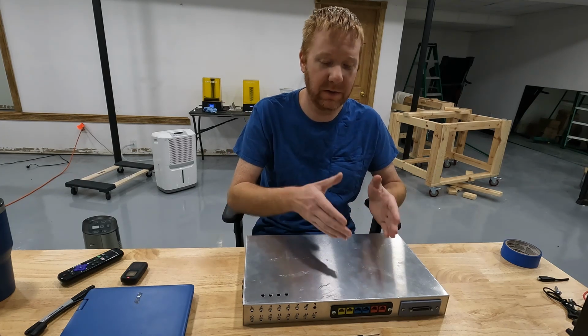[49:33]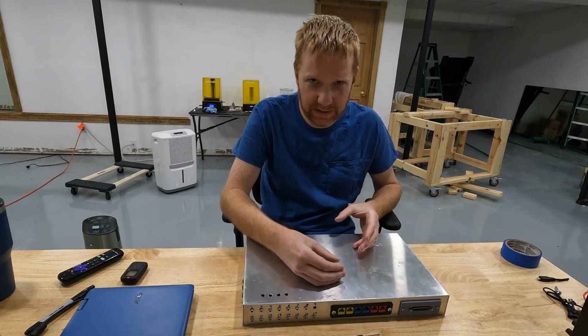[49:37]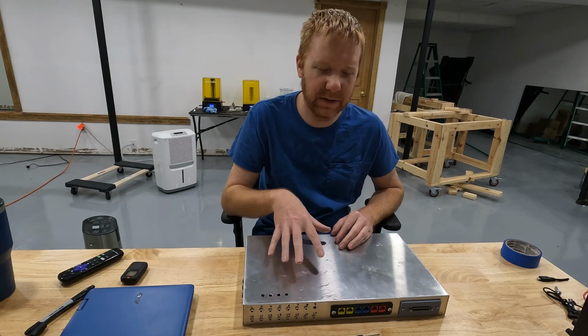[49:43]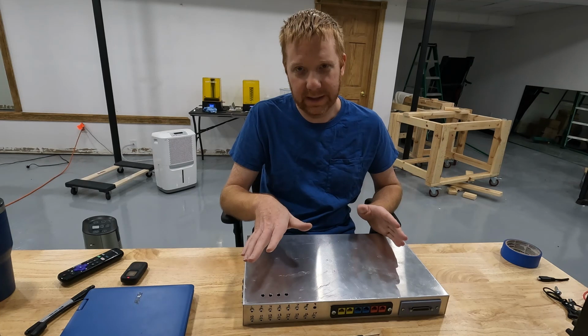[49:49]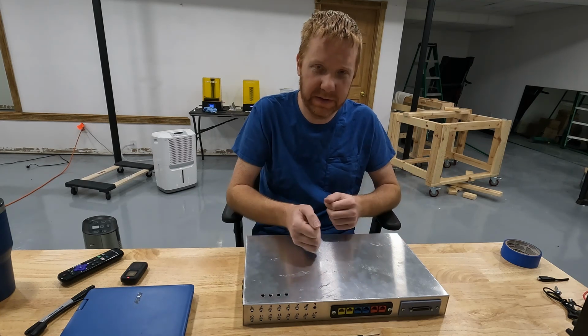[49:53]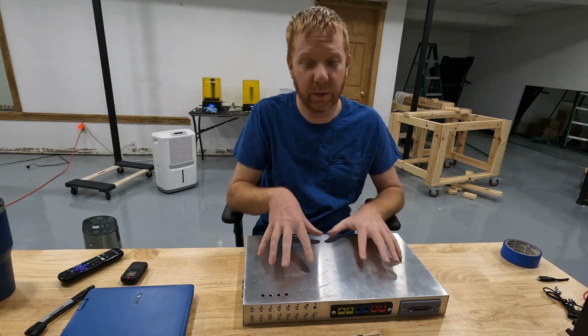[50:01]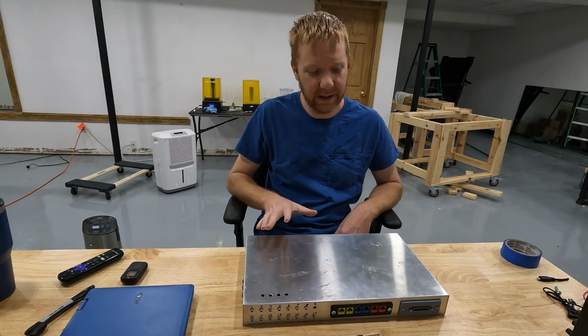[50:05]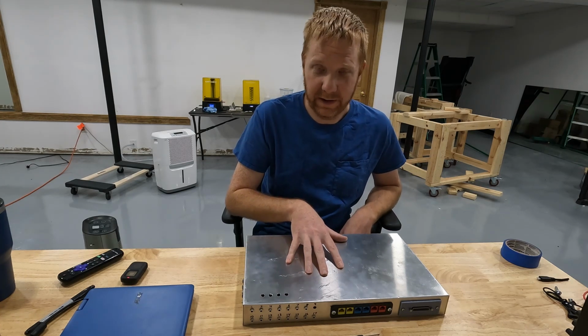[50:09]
The third thing that this controller cannot do is use a gaming system controller along with this modular controller. So I know with the Xbox Adaptive Controller, you can use an Xbox controller and the adaptive controller simultaneously. We're not going to be able to do that with this one. Again, you could probably work around that on a PC, but not on an Xbox or a PS4. However, again, I'm going to show you how to build different joysticks and thumbsticks. I know a lot of people like to use the thumbsticks on the controller and then the buttons on the adaptive controller. There are ways to do the exact same thing with this controller. So those are some of the limitations. However, given that we're building this ourselves, we can expand on it all we want, and we can do so much more with this than what we'll ever be able to do with the Microsoft controller.
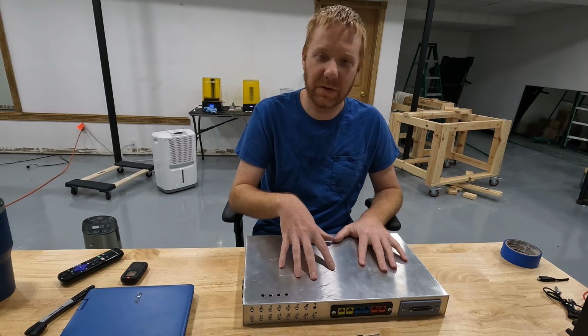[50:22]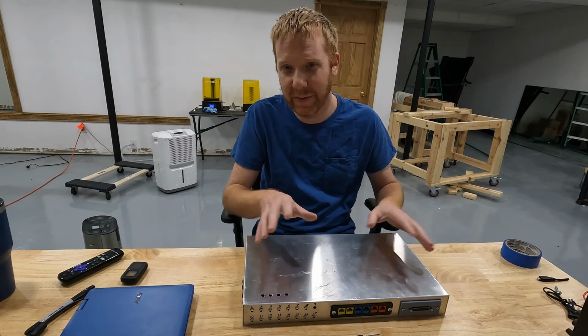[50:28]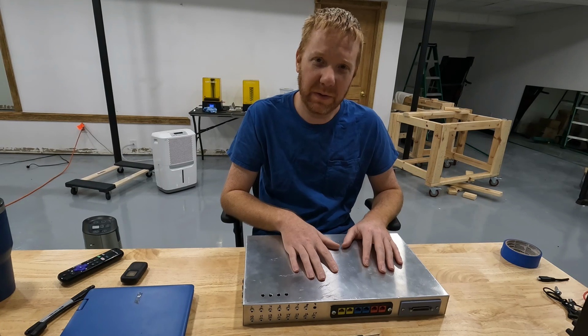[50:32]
And give me some ideas. I want to hear what you think. Start thinking about interface things that you want to see: buttons, joysticks, sip-and-puff devices, scroll bars, I don't know, touchpads. I want to get a feel for what would help you. Help me help you help yourself. So I'm looking for ideas. Please drop those down in the comments.
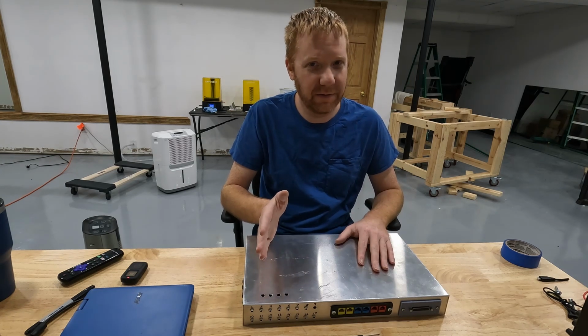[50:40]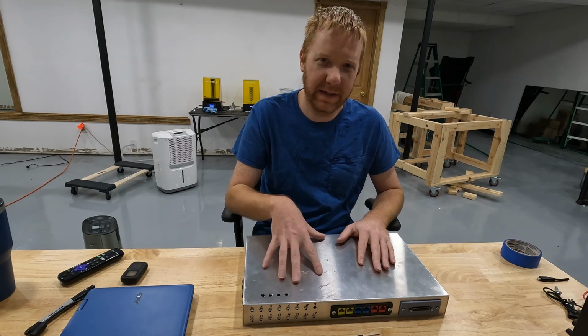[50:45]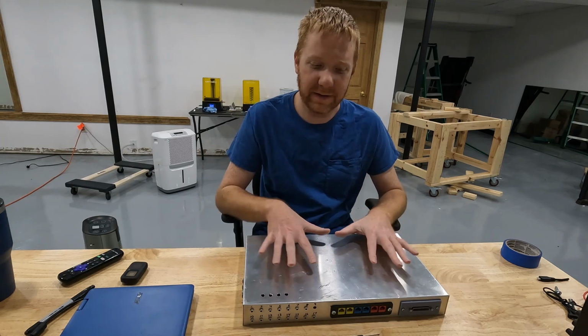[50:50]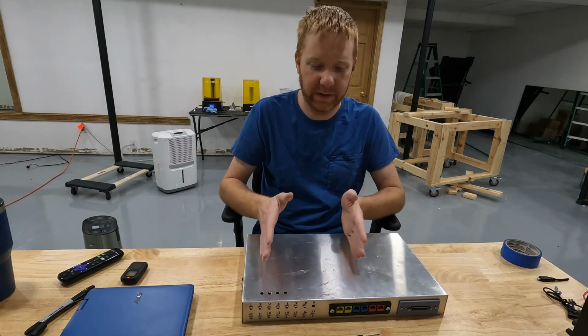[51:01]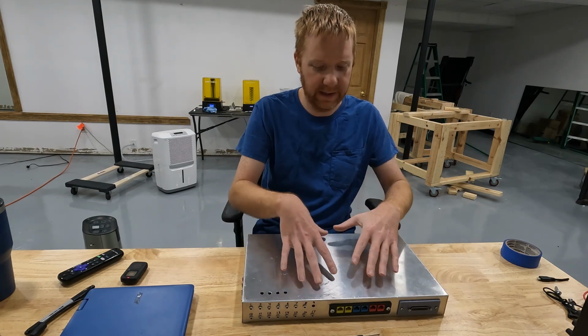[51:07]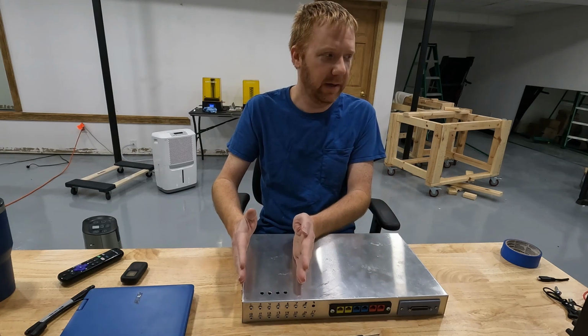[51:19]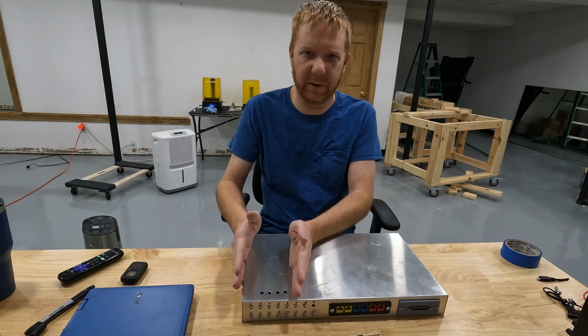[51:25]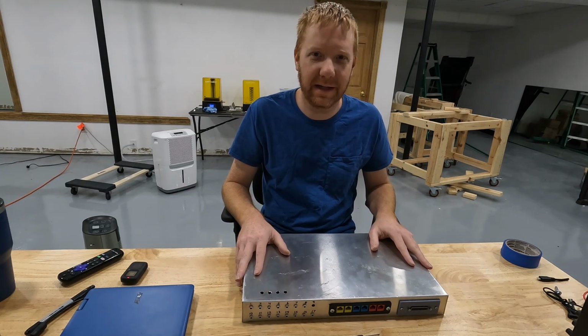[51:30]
I'm going to put all the components that I used inside of this box down in the description. Now this is not going to be the final design. This is just a proof of concept. I want to get a feel for how this stuff works, and then later I'll build another one. Could be a little bit smaller. We could definitely go a smaller package. I built this size because I thought that I would use the top platform to hold the buttons and joysticks. I'm going to play with that and see if that's feasible. If it's not, then I can make this much smaller, something like this size, and that would reduce the cost, and it would also make it a little bit easier to travel with. Something to think about. Let me know your thoughts, and I'll see you next time.
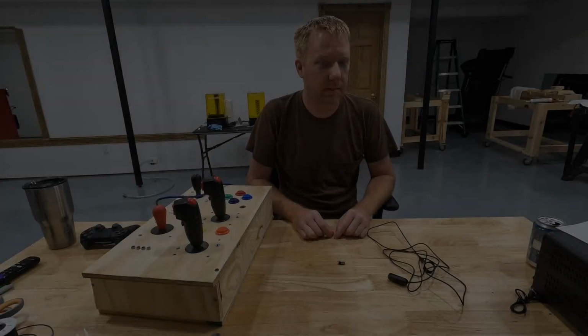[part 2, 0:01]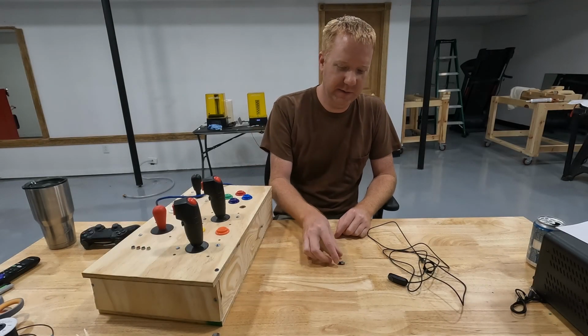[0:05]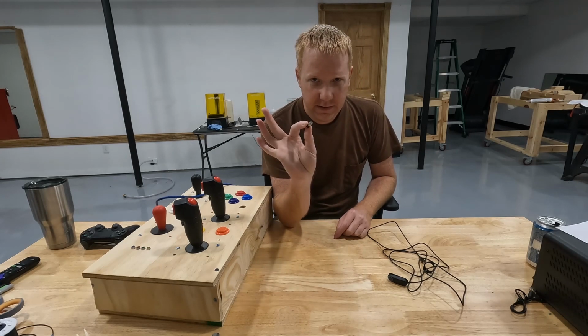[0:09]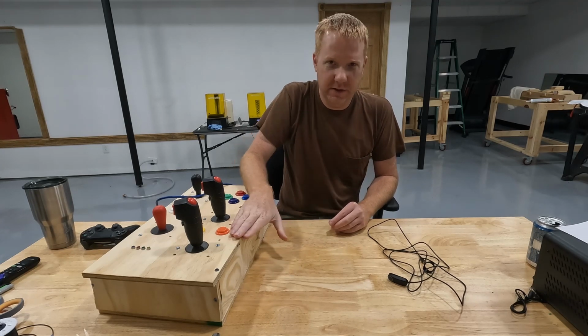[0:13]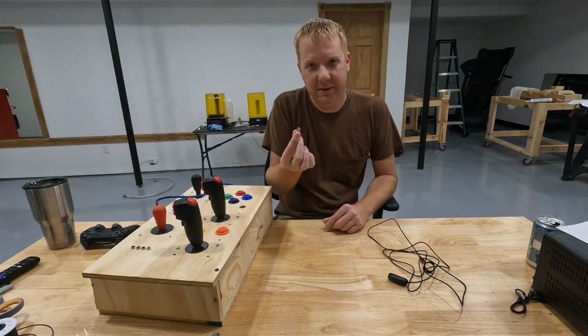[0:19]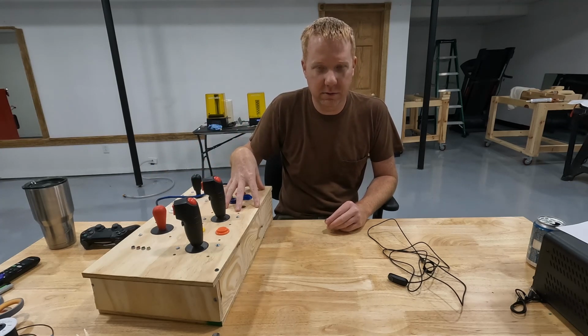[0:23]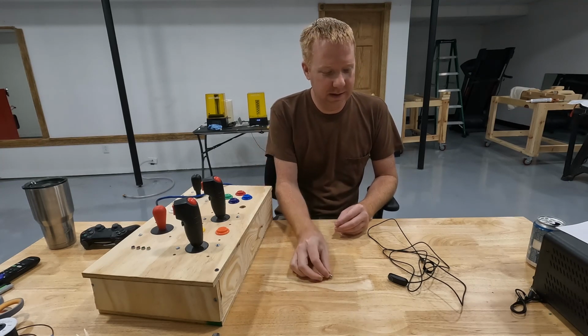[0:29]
I had somebody reach out to me and ask if it's possible to install a 3.5mm socket inside of the PlayStation controller that we built for quadriplegic. And the answer is yes, we absolutely can install a connector like this to control any button on our controller that we want to.
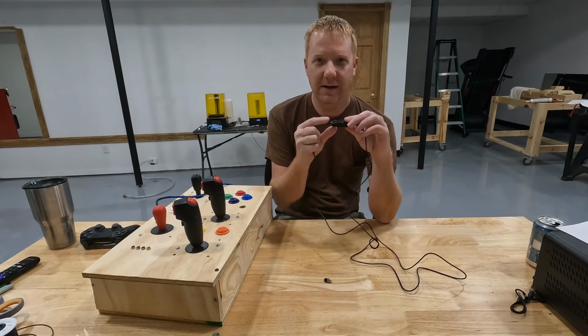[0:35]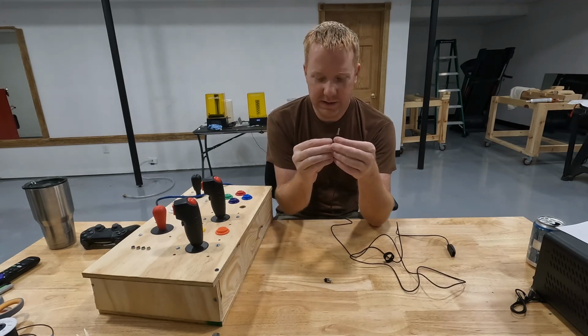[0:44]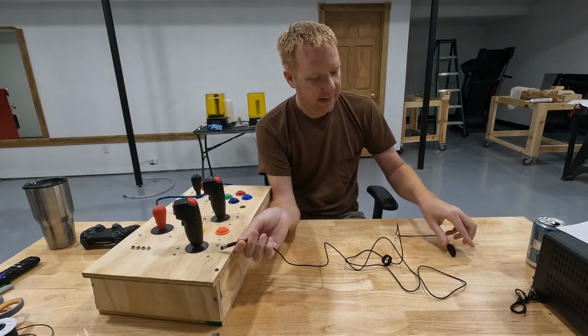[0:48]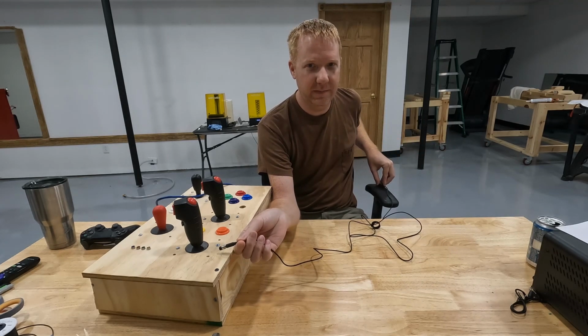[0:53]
Now the reason that this person is looking into doing this is because if you have the 3.5mm capability, you can connect a switch like this. So this is an on-off switch. It's nothing special, it's just on and off, just like an arcade button would be on our existing controller. Except it has a 3.5mm plug on the end of it, and you could plug it into a socket, and then you could route this switch to other locations that you could use different body parts to operate it.
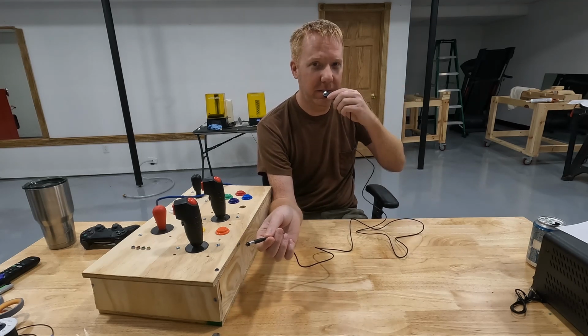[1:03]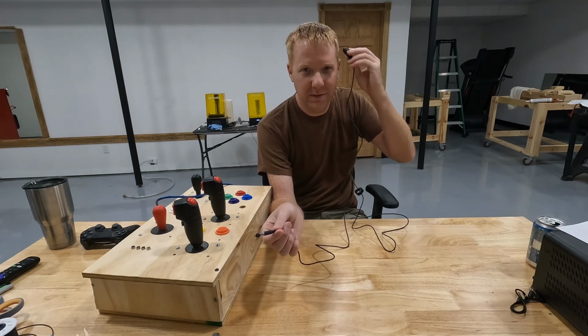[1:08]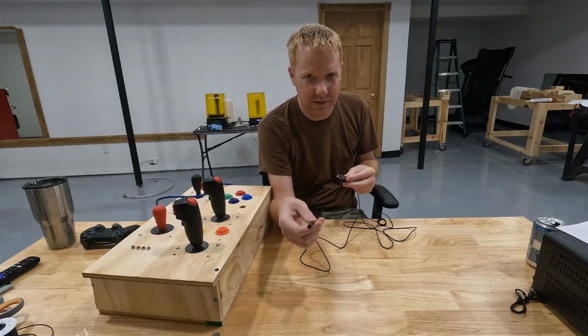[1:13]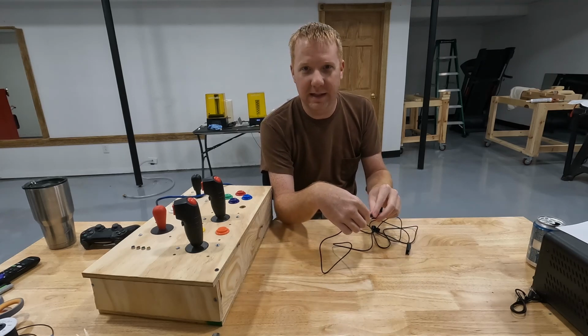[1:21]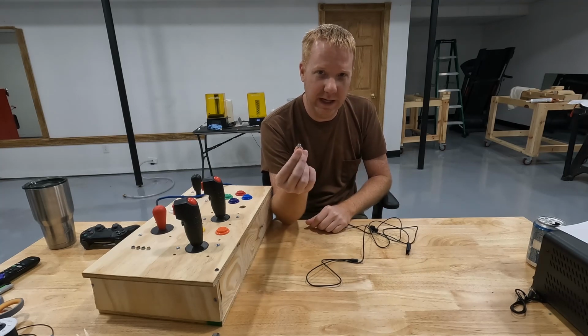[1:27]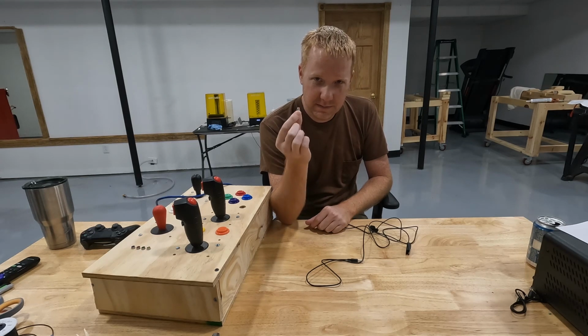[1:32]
So you might mount it to a wheelchair arm and control it with an elbow, or you could put it in your mouth and bite on it. I know a lot of people use that method. You'd also put it near your head, or use your feet if your hands are disabled but your feet still work. There's all kinds of things that you can do with a device like this. Now this is a simple switch. They also make sip-puff devices and all kinds of devices that you could connect to a 3.5mm jack. So let's see how we can install a 3.5mm jack inside of our controller.
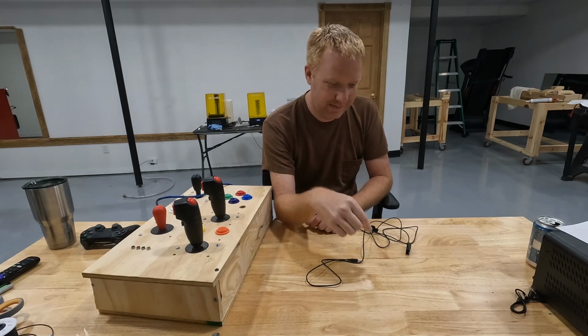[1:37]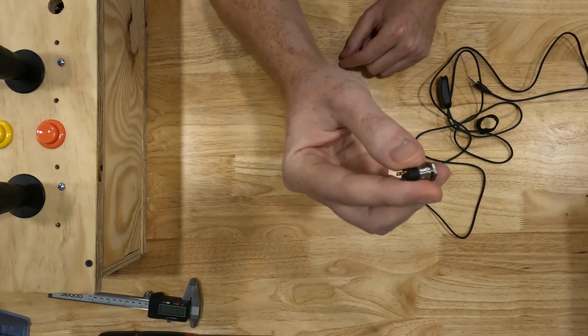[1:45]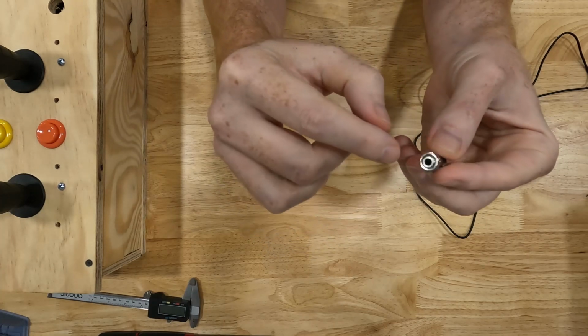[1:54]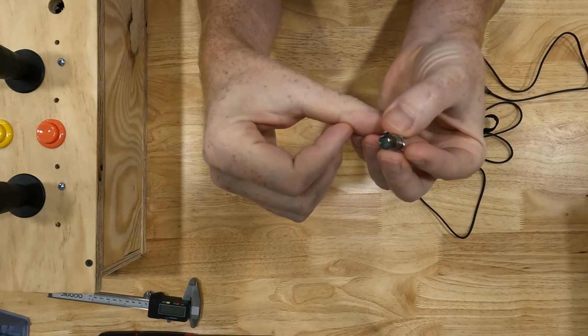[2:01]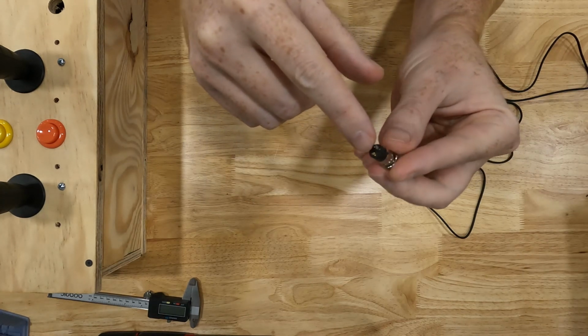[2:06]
Before we get started, we need to quickly discuss exactly what kind of 3.5mm jack we want to install, because there are multiple types of jacks. Now a 3.5mm jack, they all plug in the same. The difference is how many terminals they have on the inside of them. So for example, the one I hold in my hand, this is a 4-terminal 3.5mm jack, and it's called a TRRS.
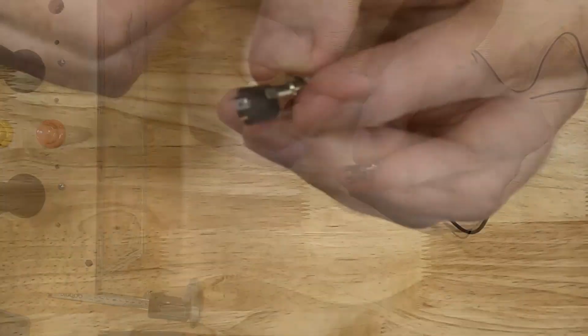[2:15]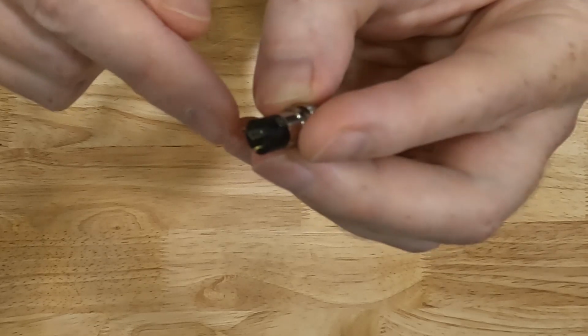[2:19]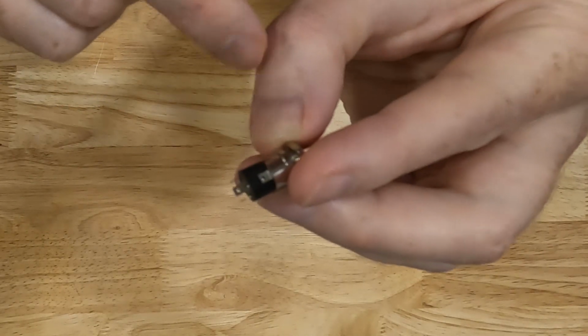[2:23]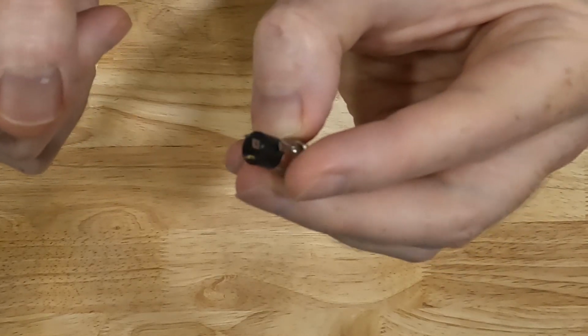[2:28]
So you'll see, if you can see it in the camera, I think it's kind of hard to show here, but there are 3 terminals on the very back of it, and then there's 1 terminal on the top. This top terminal is ground, and then the other 3 are for whatever signals you want to plug into it.
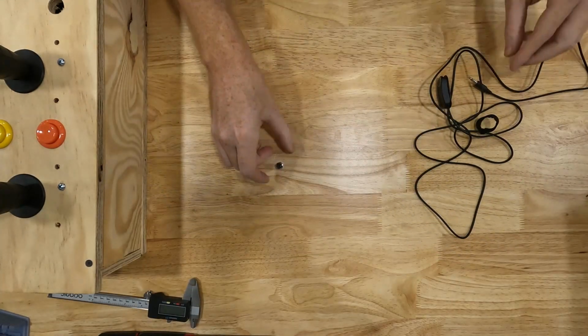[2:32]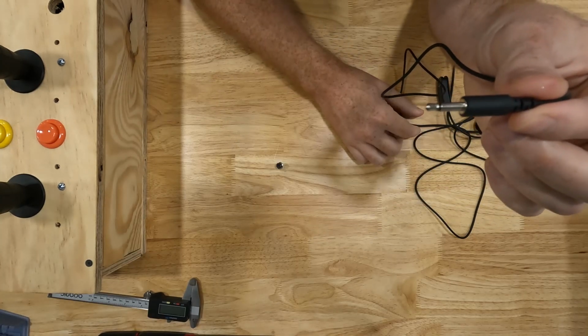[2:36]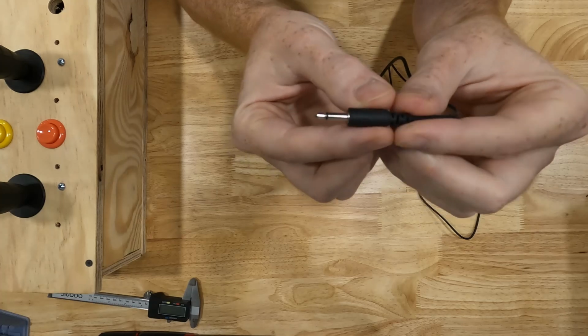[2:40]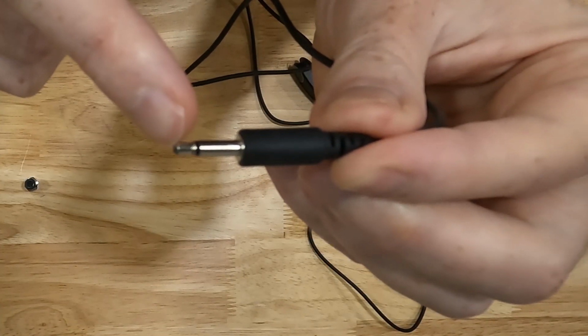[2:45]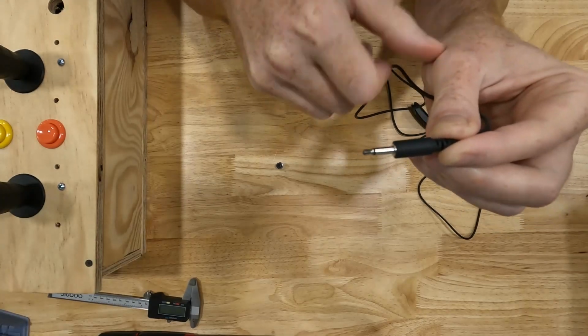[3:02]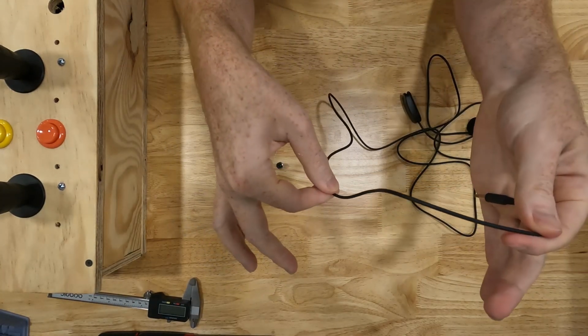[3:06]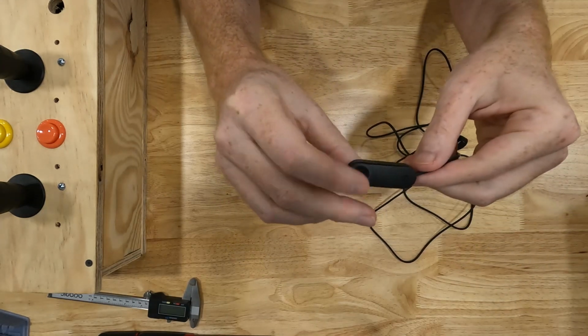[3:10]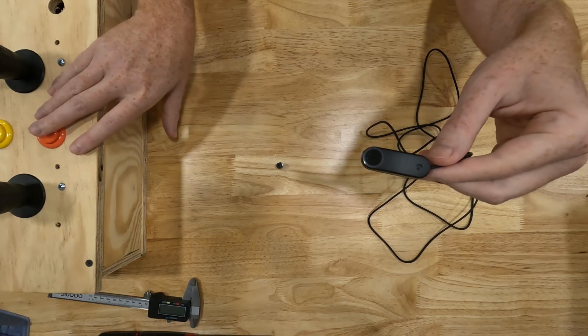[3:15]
Now, this connector that's attached to our simple switch that we looked at, it only has 2 contacts on it. So there's one at the very tip of it, and then there's one at the back of it, and you can tell how many contacts it has because of this black insulating ring. So this black insulator insulates the 2 contacts from touching each other, and that's how you know that this is one contact and that's another contact. So that means that there are 2 wires inside of this cable, which makes sense because this is a simple on-off switch, and you know that when we wired our arcade buttons, they only had 2 contacts on them, one for ground and one for the signal that we send to, in our case, the Brook wireless fighting board.
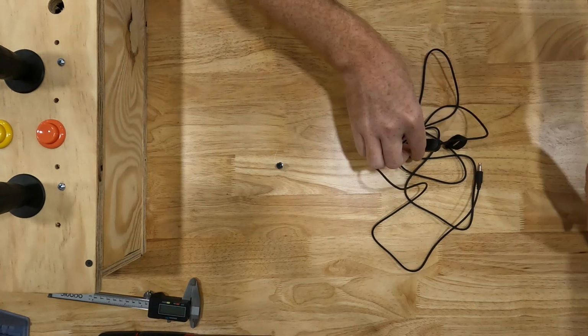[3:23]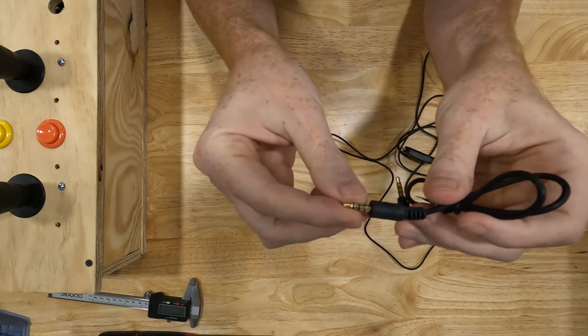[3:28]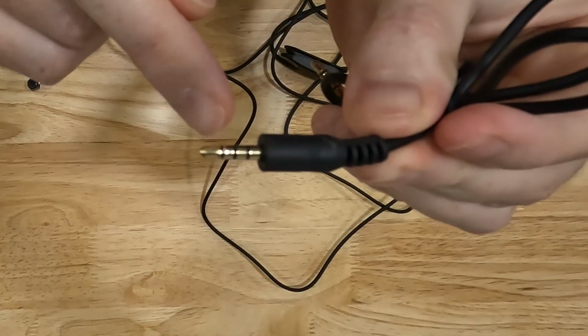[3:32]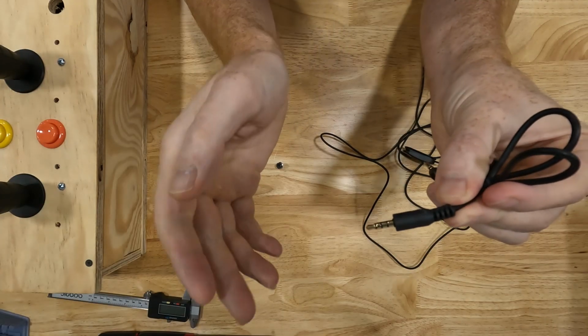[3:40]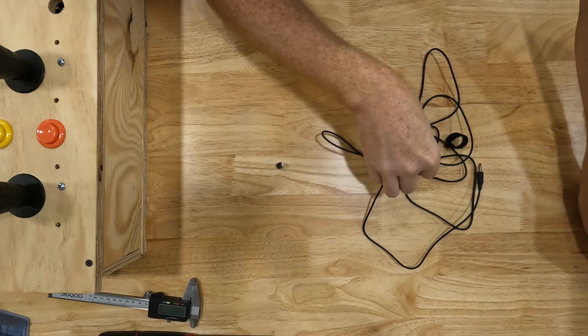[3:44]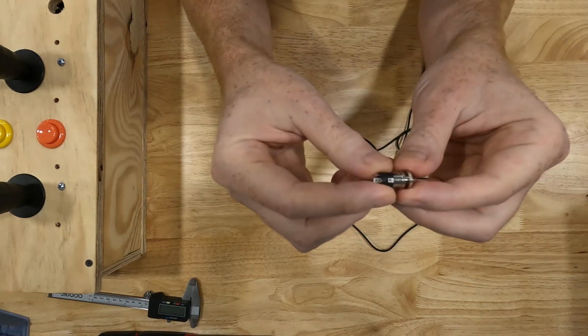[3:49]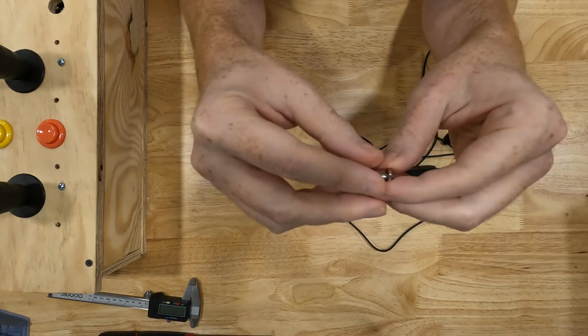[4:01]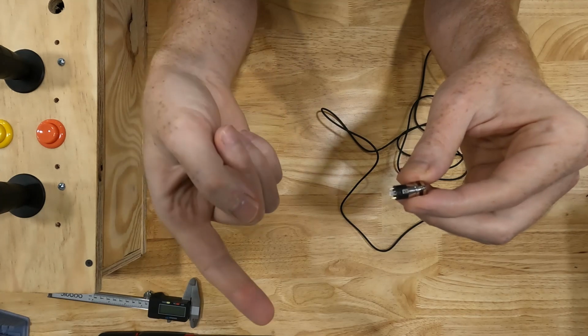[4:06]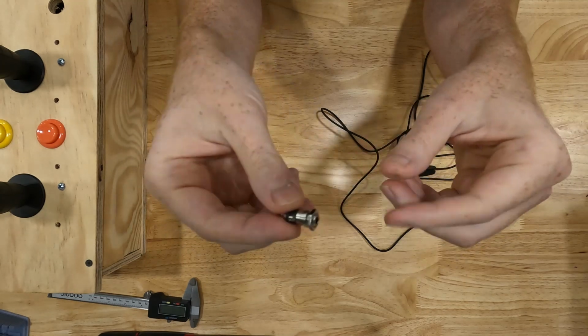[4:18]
Another example of this is this guy right here. This has 4 contacts on it, so you can see that there are 3 black insulating rings and 4 contacts. So which one you need really depends on what you're trying to do with it. If you want to just use a simple switch like this, you really only need a 2-terminal jack instead of the 4-terminal jack that I have here. If you want to use this to connect an analog joystick, for example, then you need all 4 terminals. You need one for ground, one for VCC, which is the reference voltage. You need one signal for the x-axis and one signal for the y-axis, which is 4 connections total. So that's why I have this jack in my hand.
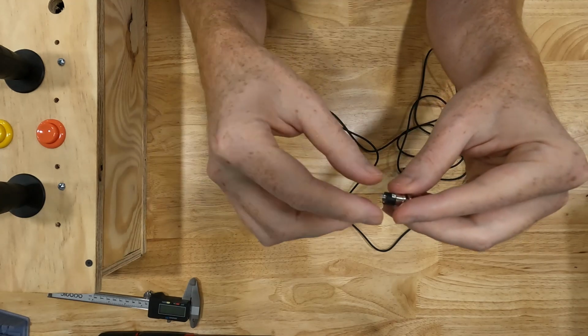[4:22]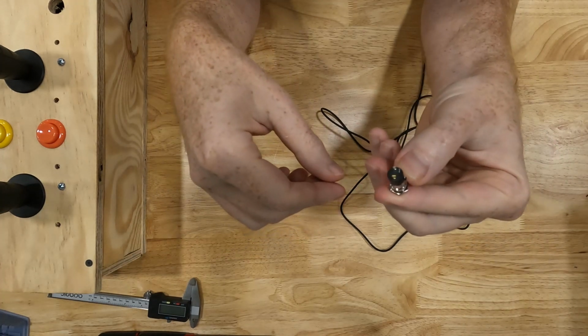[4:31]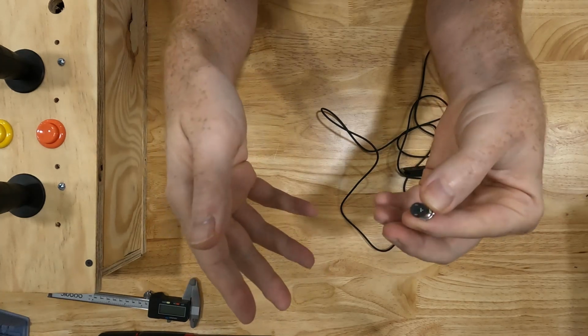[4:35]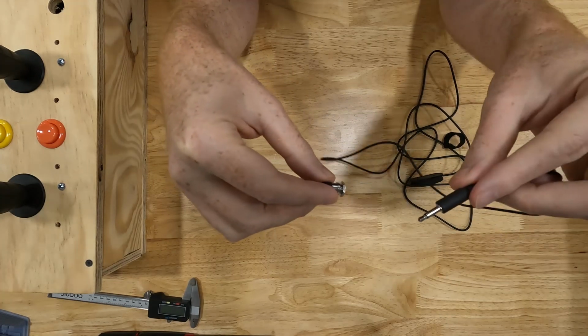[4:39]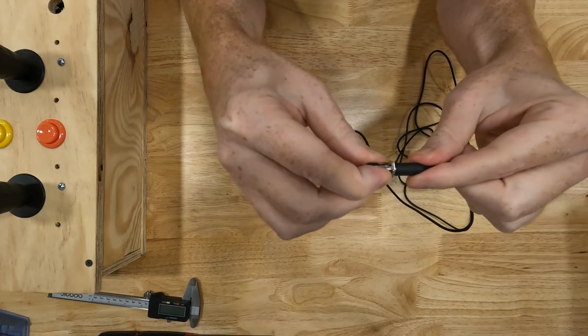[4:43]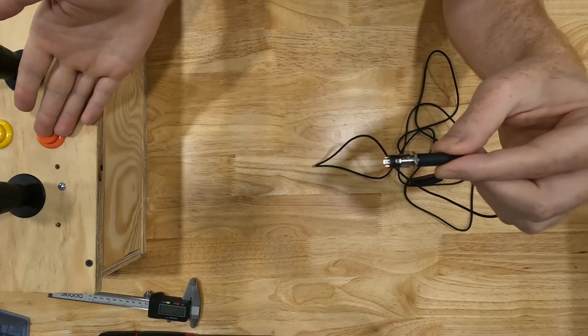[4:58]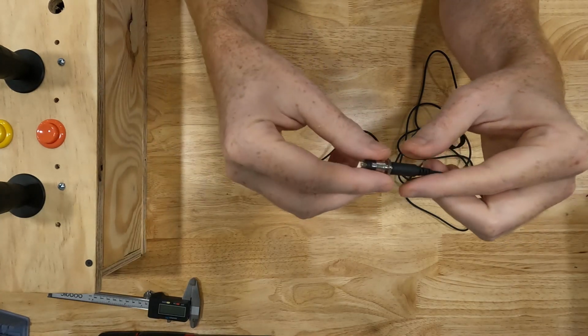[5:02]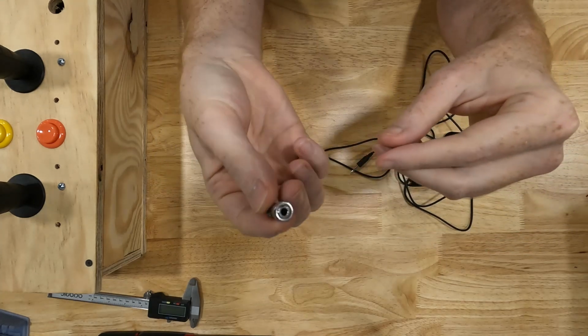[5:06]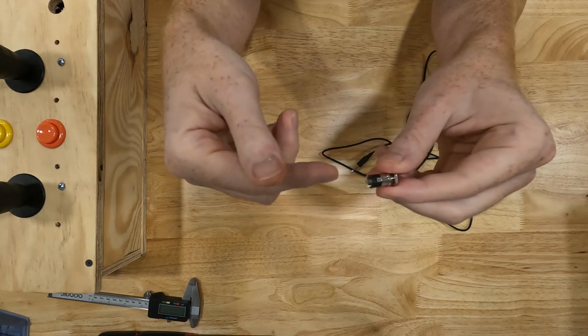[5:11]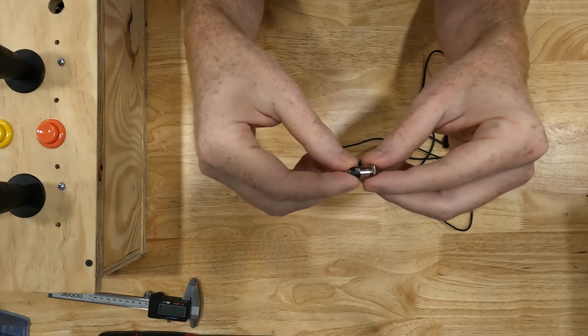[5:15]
Now, if I were doing it, and this is what I did, I would probably install a 4-terminal jack, no matter how many connections I actually need, because I can still plug a 2-contact switch into my 4-contact jack, and it's going to work just fine. What it's going to do is only 2 of my terminals are going to be useful. So we will only wire up 2 out of the 4 terminals to control a button. And then if you wanted to expand on it later, if you wanted to change that into an analog capability for this 3.5mm jack, all you'd have to do is connect 2 more wires to it and then route them to wherever you needed them to go.
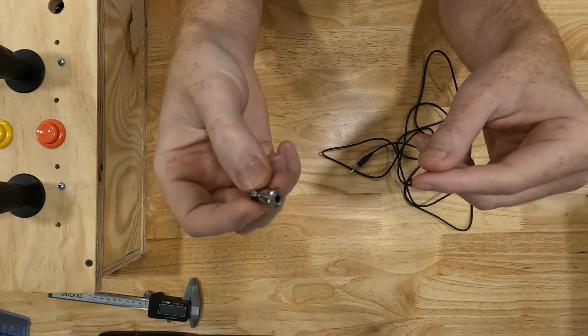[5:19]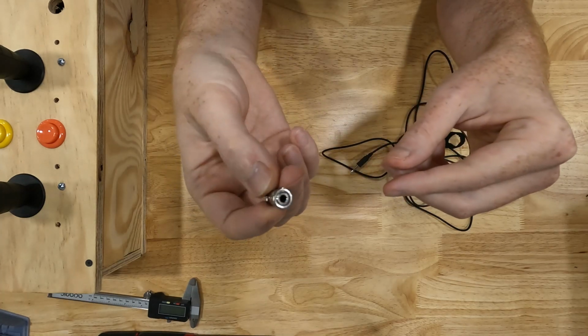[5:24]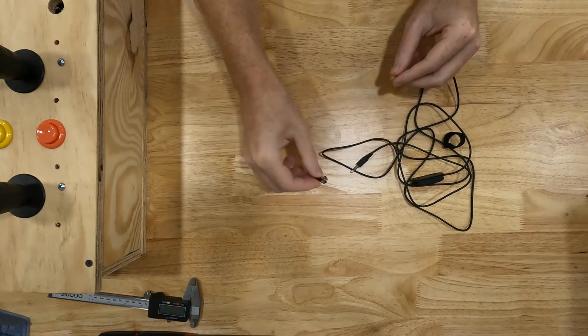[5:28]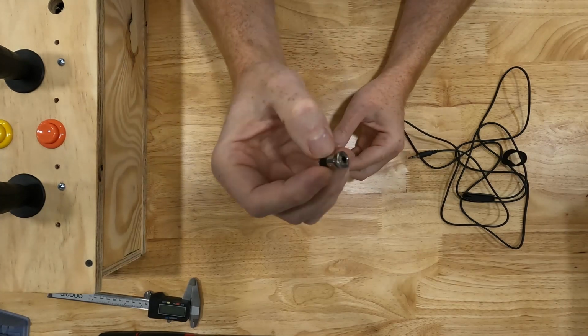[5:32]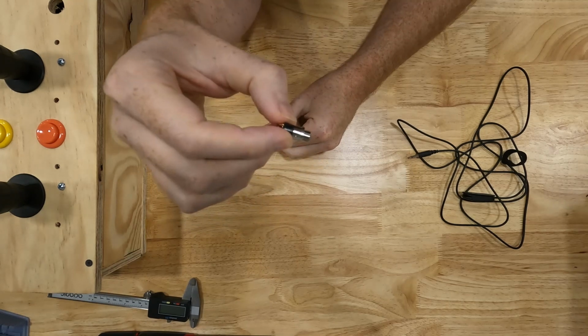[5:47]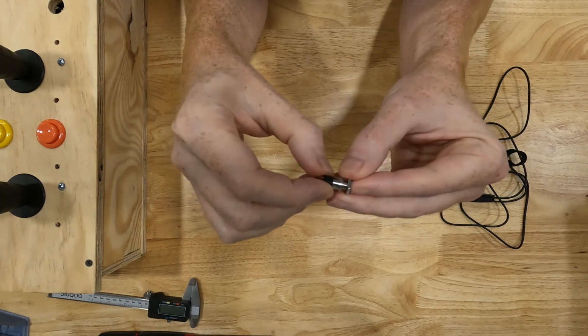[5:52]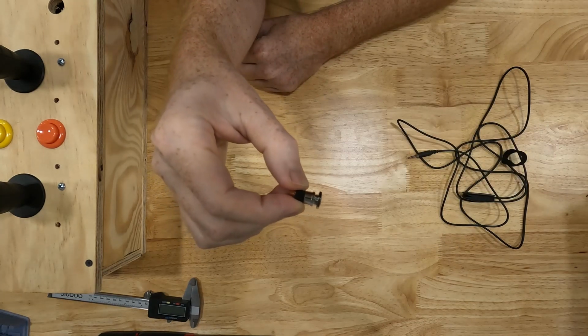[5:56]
Now these are designed, this is a bulkhead fitting, and these are really common. They're not hard to get, and they're not real expensive. But these are designed to attach to thin sheet metal. So it's got a nut on it that you would take off. You would drill a hole inside of your sheet metal panel. You would stick the threaded end through the hole in your sheet metal, and then you would thread the nut on the other side, and that would hold the connector in your sheet metal.
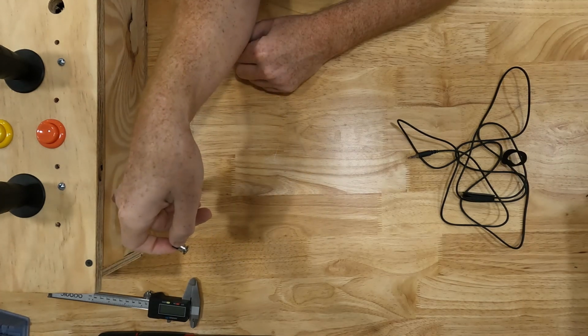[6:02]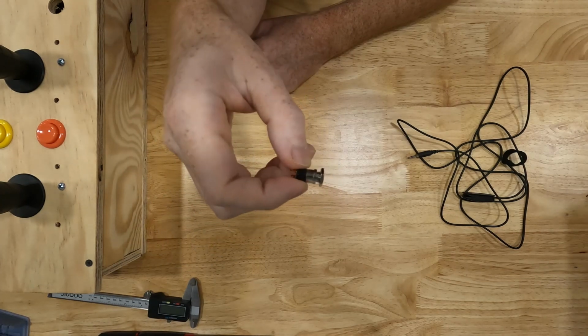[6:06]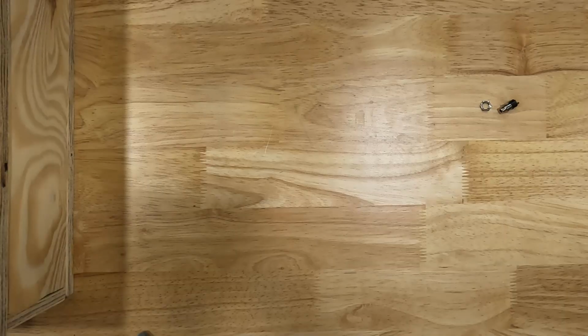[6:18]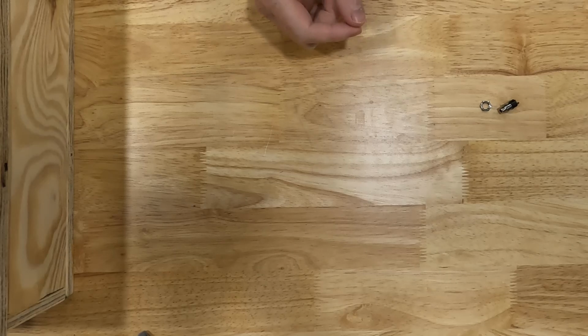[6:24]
Now I didn't use sheet metal, I used 3/4 or 1/2 inch plywood. So the threads aren't long enough for me to attach one of these to my box. So let me show you a way that we can attach something like this to our wooden box without too much effort and without too much extra equipment. What you're going to need to attach this to the box is some kind of thin piece of metal or plastic, something that's rigid.
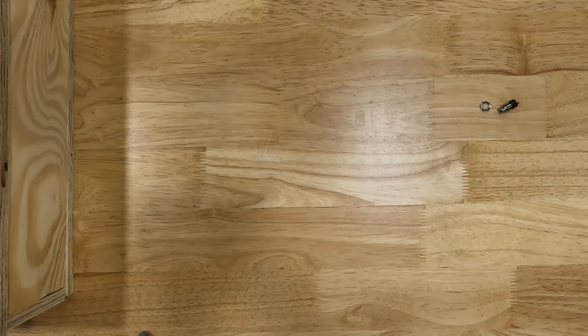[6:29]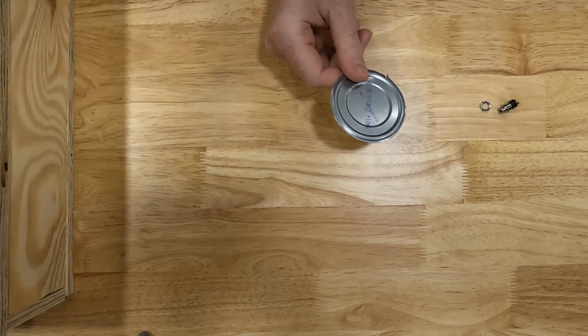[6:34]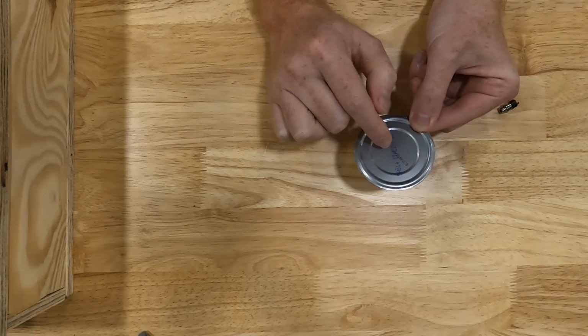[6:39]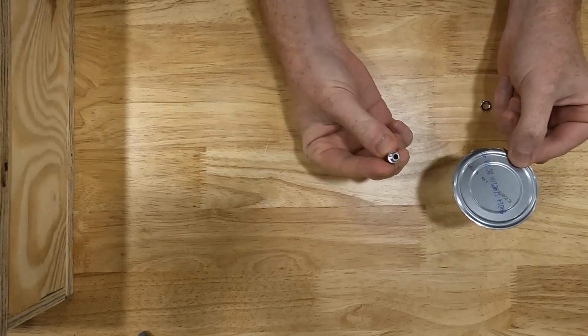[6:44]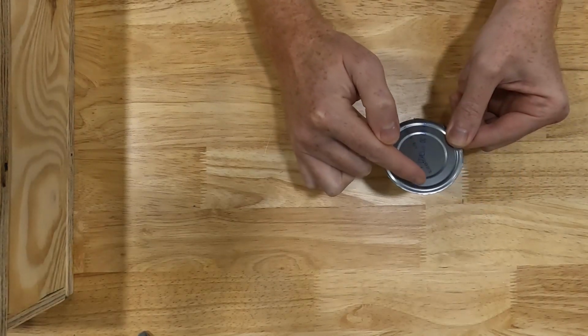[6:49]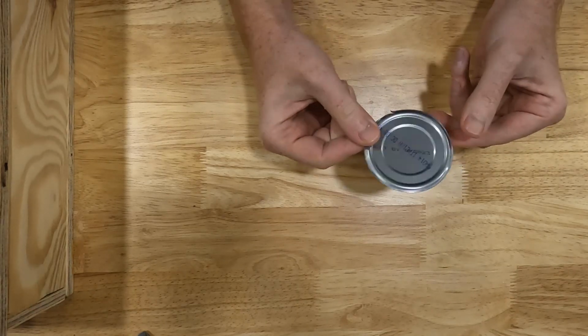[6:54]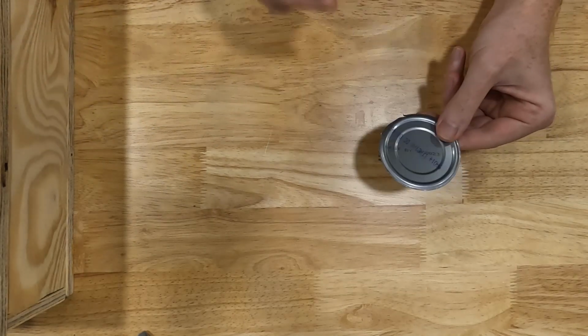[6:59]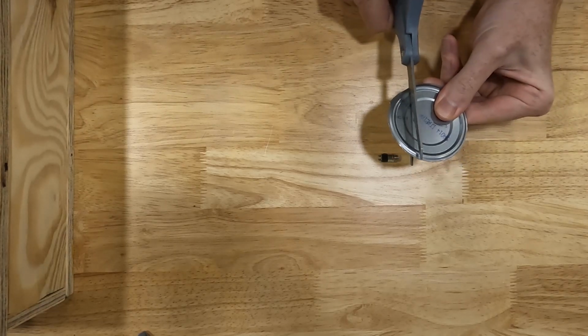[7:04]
I got a soup can lid here that I'm going to use, and what I'm going to do is cut this so that it's a rectangle. I'm going to drill a hole right in the middle of it, and that's what we're going to mount this connector into. We're just going to put it right in the center, and then we're going to put a hole on each end that's going to make like a flange. So we're going to turn this into a flange that we can then attach to the side of our box. So I'm going to take a pair of scissors. I'm just going to cut it.
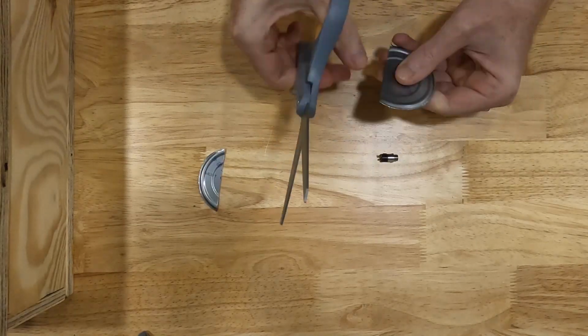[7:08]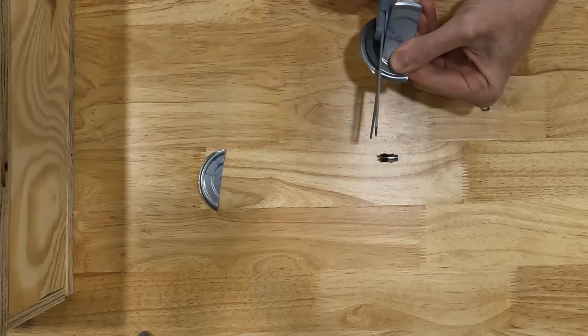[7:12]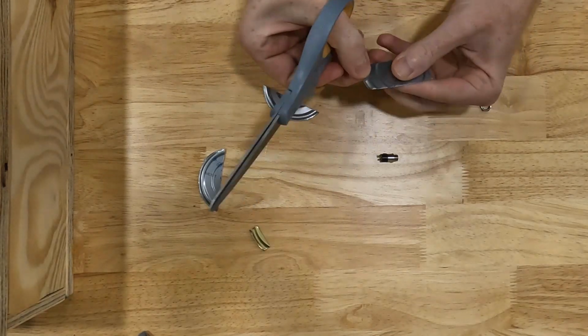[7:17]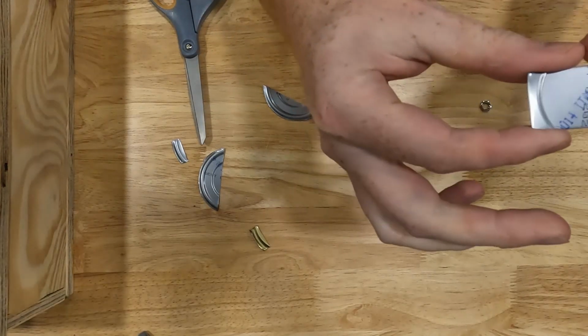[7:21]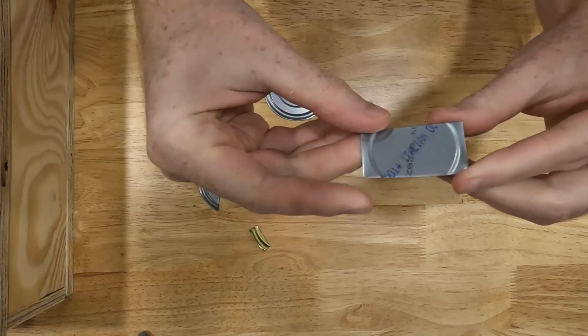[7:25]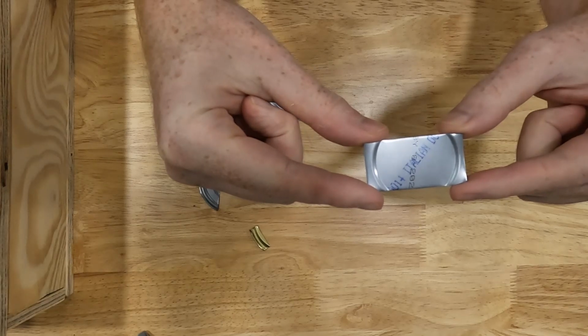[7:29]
You want to be careful while cutting thin sheet metal like this, because it is really sharp and it's easy to cut yourself. So it might be a good idea to wear gloves or just be really careful. So it should have something like this. Now let me go drill a couple holes and I'll be back.
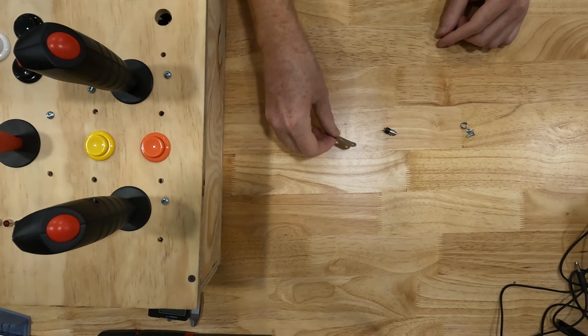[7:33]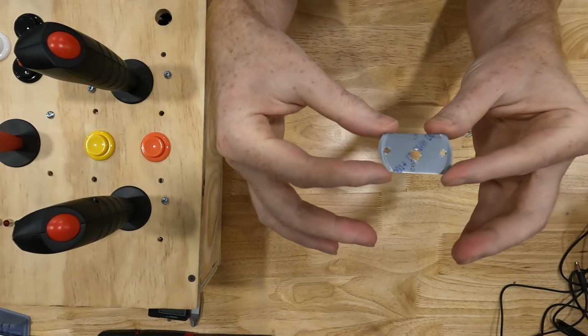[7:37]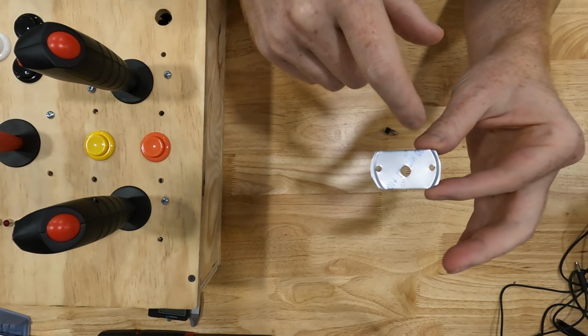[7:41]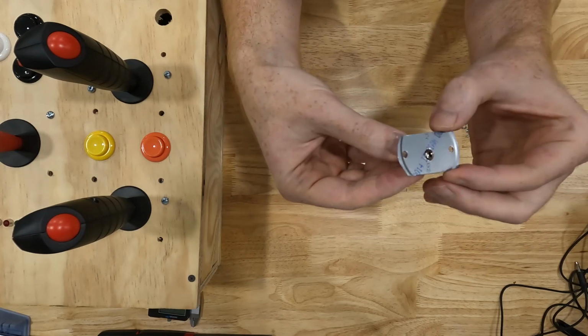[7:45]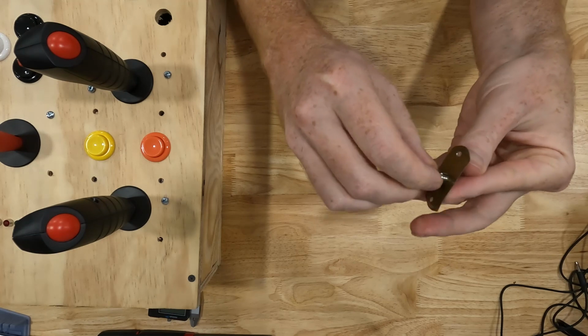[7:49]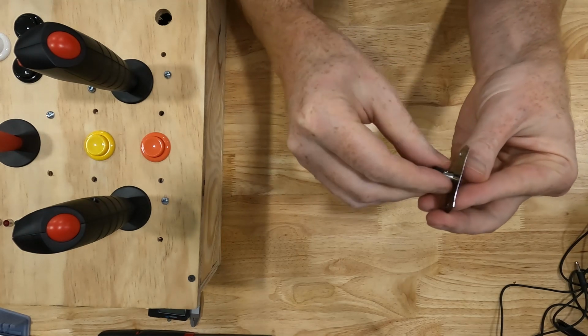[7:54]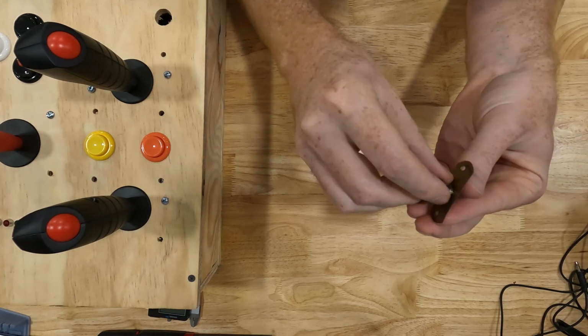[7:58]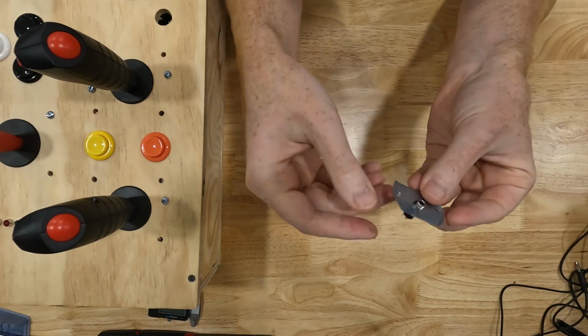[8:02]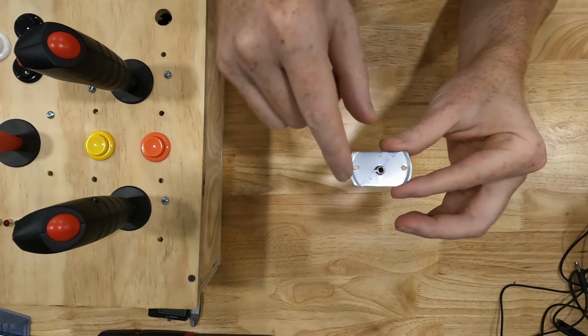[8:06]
Here's a result of the homemade flange that I made. So all I did was drill a hole in the center for our 3.5mm plug to go into. That hole size is drill bit H is what I used. It could be a little bit bigger. This one's a pretty tight fit. But this is a 7mm thread, so whatever clearance you need for a 7mm will work. And then I drilled 2 holes, one on each side of the plug that we can use for screws. So I've got some number 6 wood screws here that I'm going to use, and I'm using these screws because I have them. So those will go in here, and that's what we'll screw to our box.
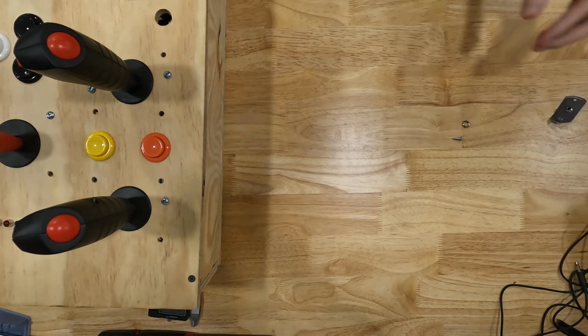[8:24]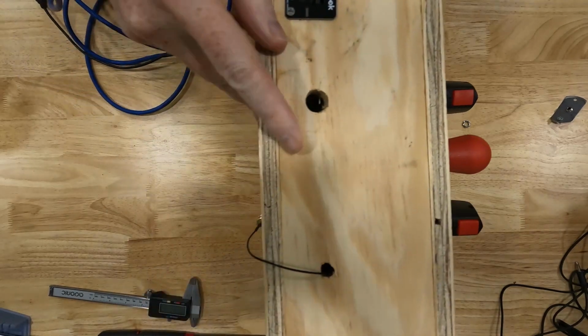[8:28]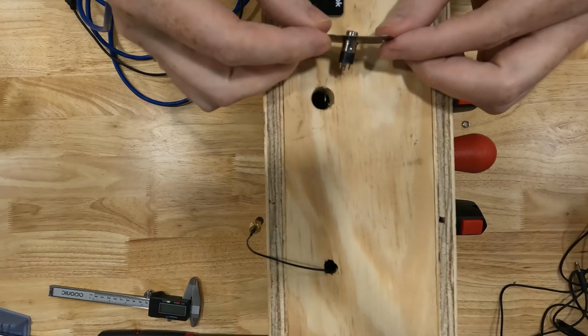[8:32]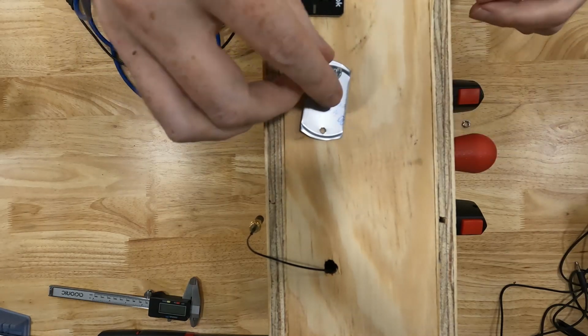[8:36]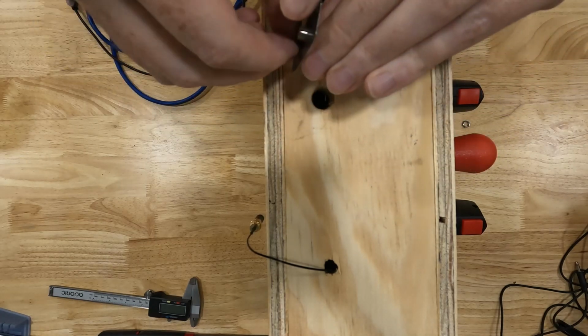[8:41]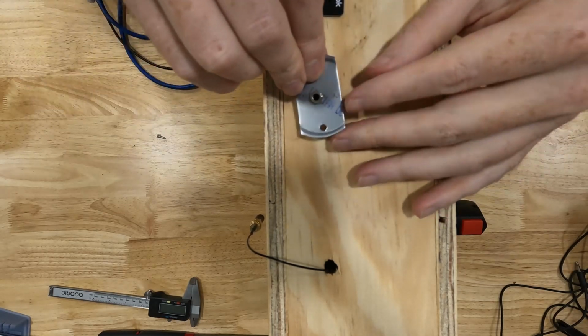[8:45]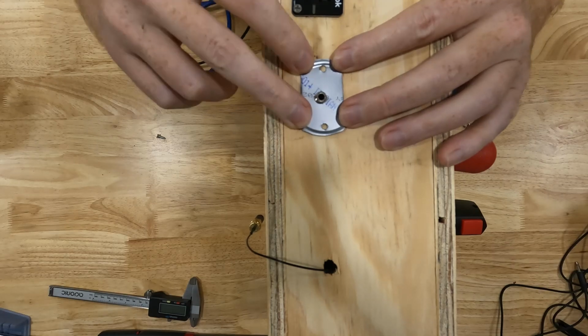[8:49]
Then we need to drill a hole in our box big enough for the back side of our 3.5mm to fit in. So for that, that is a 1/2 inch hole is what I used, and that's plenty big for the 3.5mm to fit inside. So that's kind of what it'll look like.
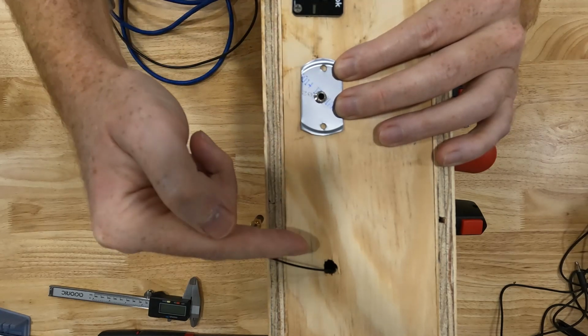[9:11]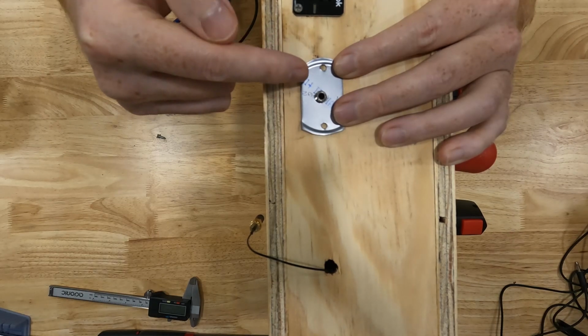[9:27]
And of course, again, you can use any type of material for a flange that you want. I used a soup can lid, but you could use rigid plastic. You could use, you know, any kind of metal really that's rigid enough that this won't bend too much. If you wanted a whole row of these, you could go to Home Depot or any hardware store and buy metal bar. So they sell aluminum or steel bar that you could get in really long lengths. You could cut that down and you could have a whole row of these things if you wanted to. But for this demonstration, we're just going to stick to the one. So now let's see what we need to do to wire it.
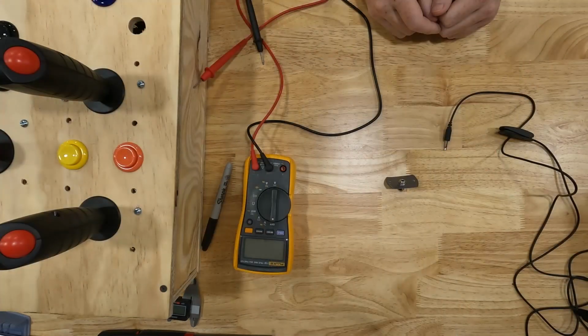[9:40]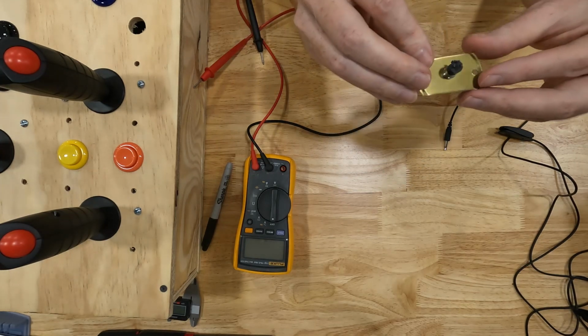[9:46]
Before I start attaching wires to this thing, I need to figure out which terminals it is that I'm going to be using, because I'm only using a 2-contact switch. I need to figure out which of these 2 contacts corresponds to which of these terminals. So on this guy, you'll see that on the top here, there's a terminal, and that's going to be ground. So we already know we're going to want to use that one.
So then I need to figure out which of these other three I need to use. So we're only going to use two. One is ground, and then one is going to be one of the other three. So what we're going to do is just plug this switch into our jack.
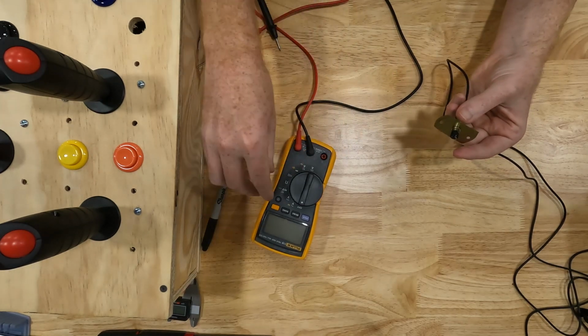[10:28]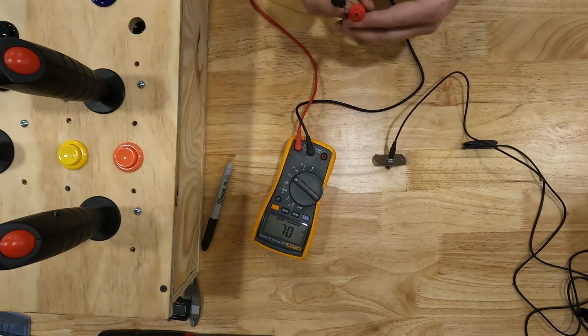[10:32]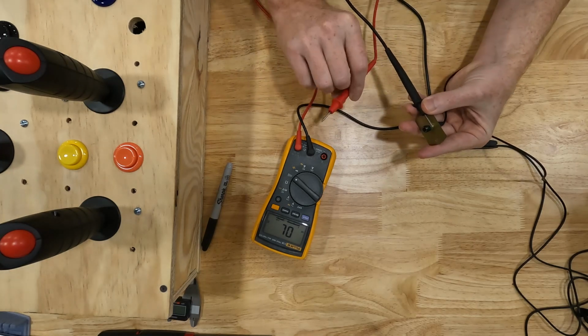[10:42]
And then I've got my beep meter here. I'm going to set it on beep, so that when the two contacts touch, it's going to beep. And I'm going to touch one contact to the ground terminal, which is the one on top. And then I'm just going to go around to the other three and figure out which one does not beep.
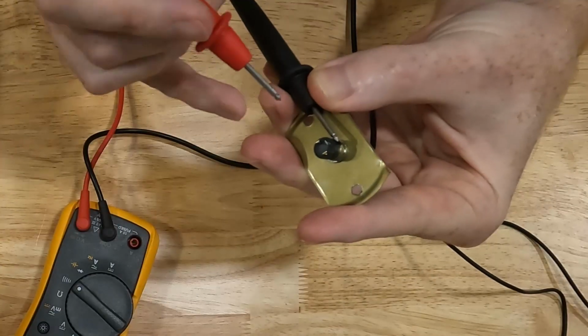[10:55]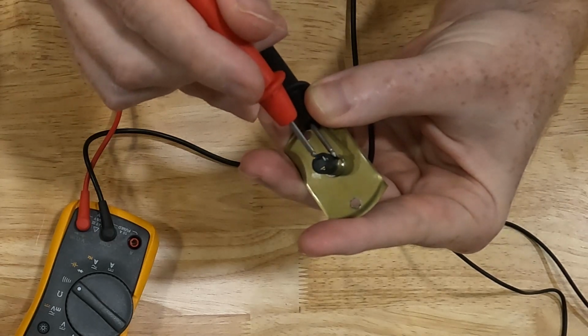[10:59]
So what's going to happen is 2 out of these 3 terminals are going to be connected to ground. So whenever I touch one of them, it's going to beep. So we don't want that terminal. We don't want that terminal. That terminal right there does not beep when I touch it. So that's the one we're looking for.
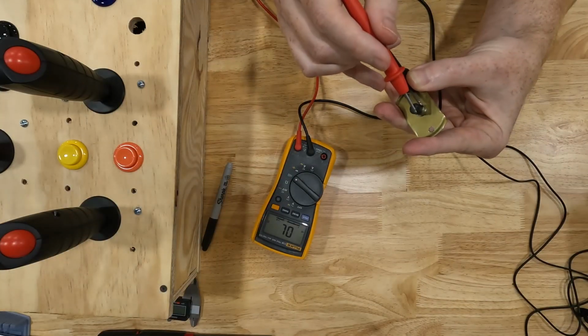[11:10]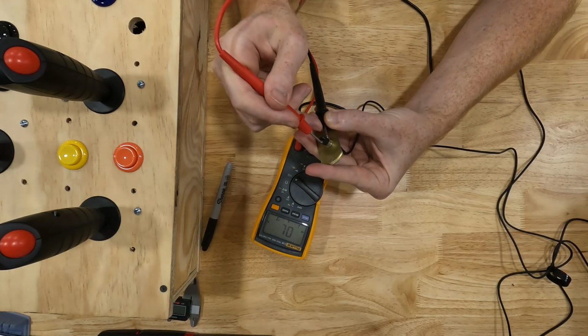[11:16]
Now that one will beep when I press the switch. So let me get the switch over here. If I press it down, it beeps. If I let up on it, it doesn't beep. See there? So that's how we know which one that we want.
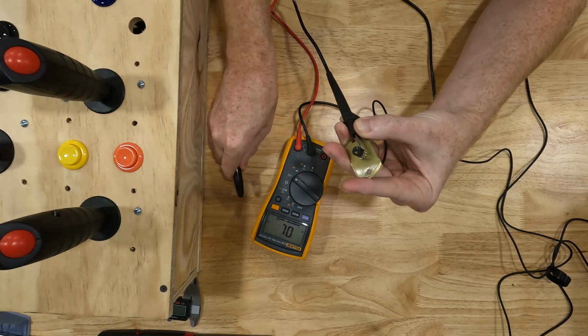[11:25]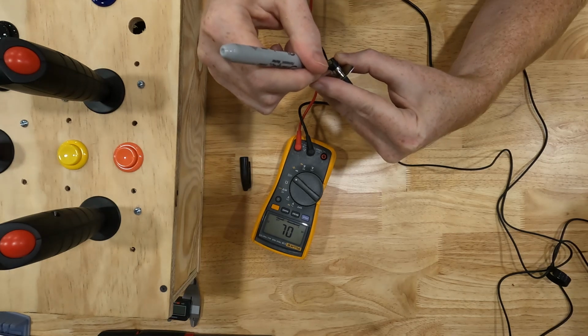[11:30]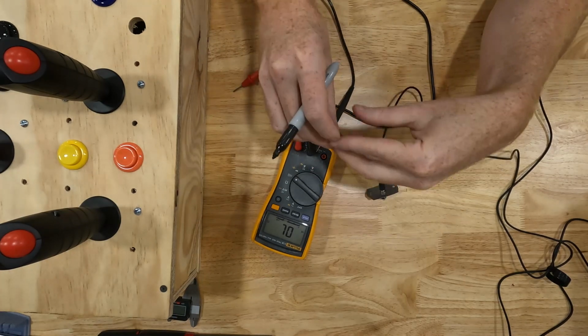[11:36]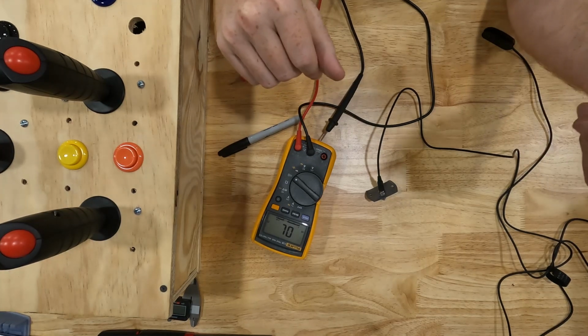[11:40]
Now I'm going to take a Sharpie and I'm going to make a little bit of mark on the side of this so that I remember. That's an indicator of which one I want to solder to. Now let's get some wires. We'll solder a couple wires up to it and then install it in our box.
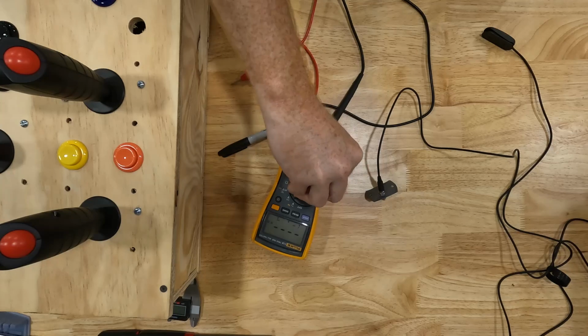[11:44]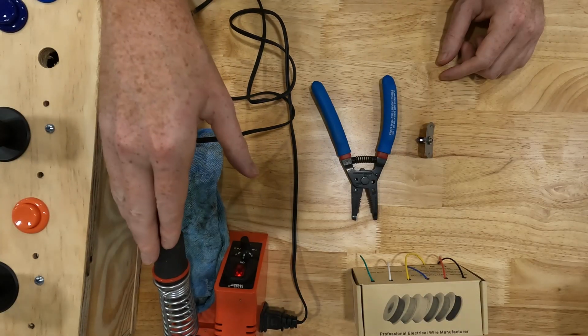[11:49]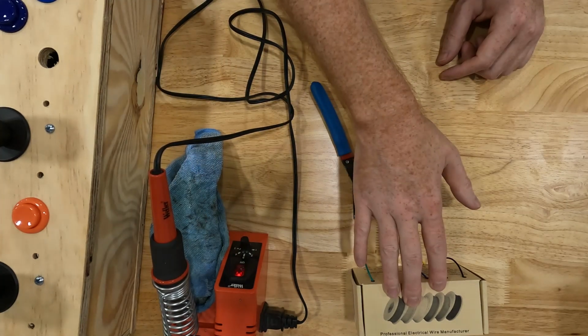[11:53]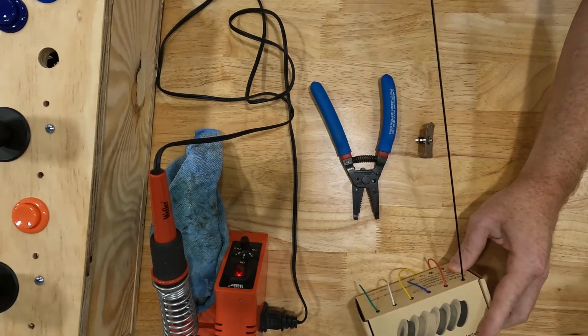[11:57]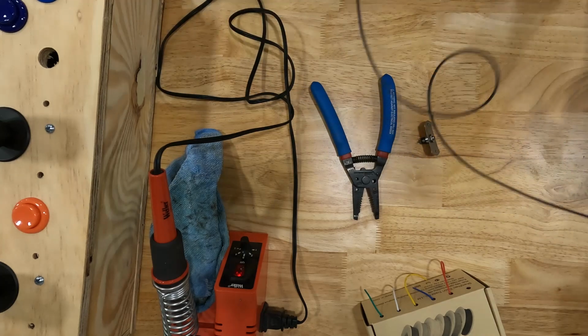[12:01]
Okay, I've got my soldering iron heating up here. I went and got my wire strippers, and then I got some wire. So let's go ahead and pull out just the length of wire. I'm going to use black for ground, and I guess we'll use that length because that's the end of the roll.
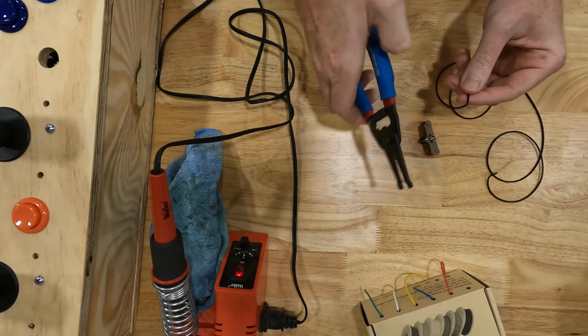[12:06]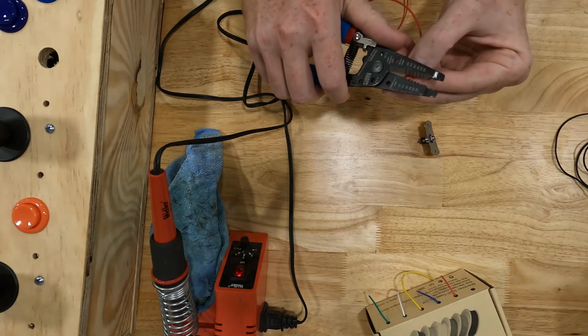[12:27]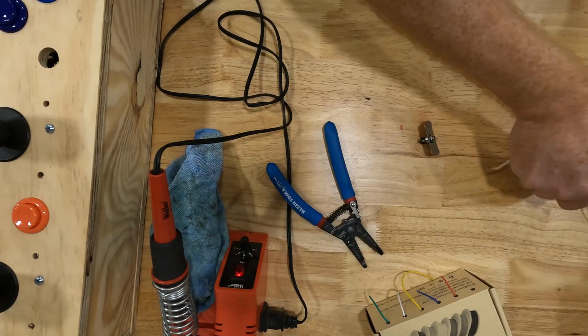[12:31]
So we will strip this. We're just going to strip a little bit off of the end, just like that. And then we're going to pull, let's pull red. We'll do red for positive, black for negative. We're going to do the same thing on this one, just strip a little bit off the end. Then we're going to take some solder.
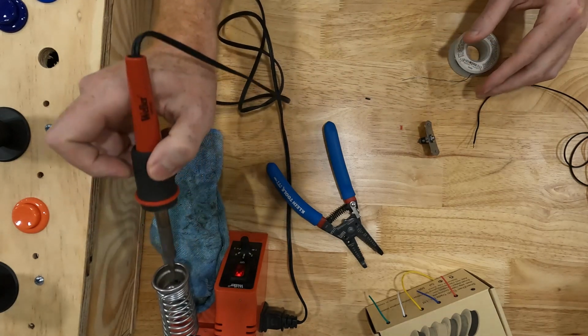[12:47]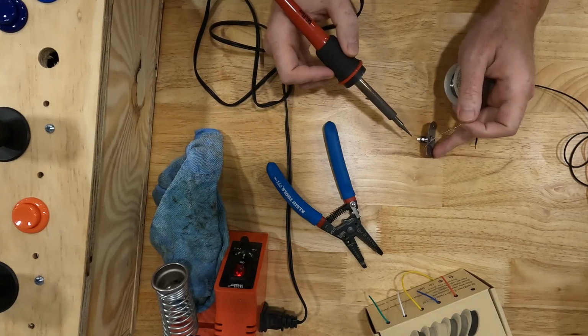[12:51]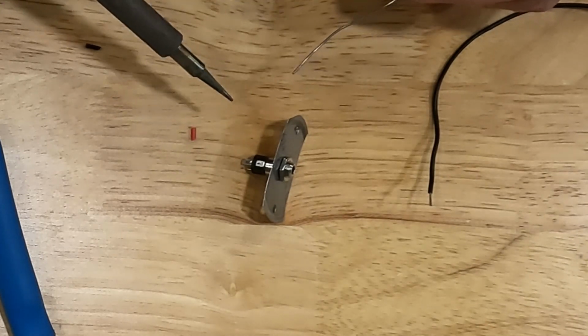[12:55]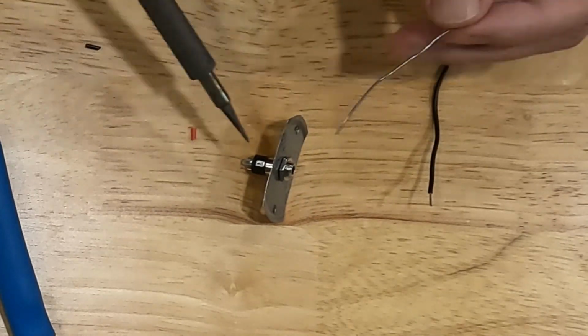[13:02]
We're going to take the soldering iron. And what I like to do is put a little bit of solder on the tab of the connector first. So I like to tin the tabs, and then I like to tin the wire, and then I like to melt the two together. So what I'm going to do is just take the tip of my soldering iron.
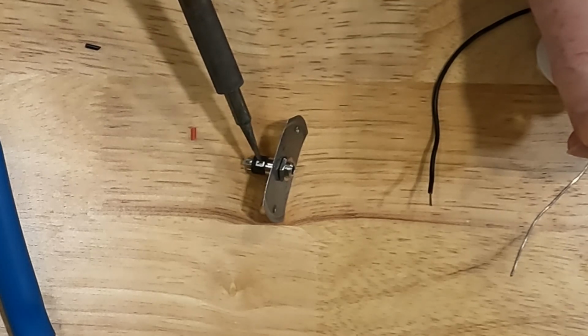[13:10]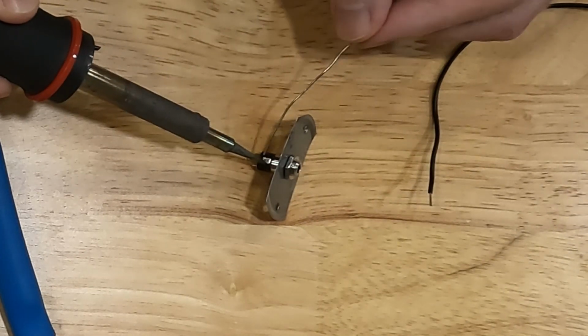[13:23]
I'm not putting any solder on it right now. I'm just going to take the tip of the soldering iron and I'm going to touch it to the top of the terminal that I want to solder to. And that's going to start heating up that terminal. And then I'm going to take my solder, and as that's heating up, I'm going to touch the terminal. I'm not going to touch the soldering iron, I'm going to touch the terminal. And when that terminal gets hot enough, the solder will melt onto it and it'll flow all the way across.
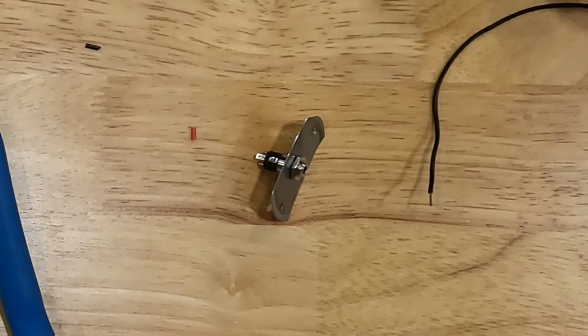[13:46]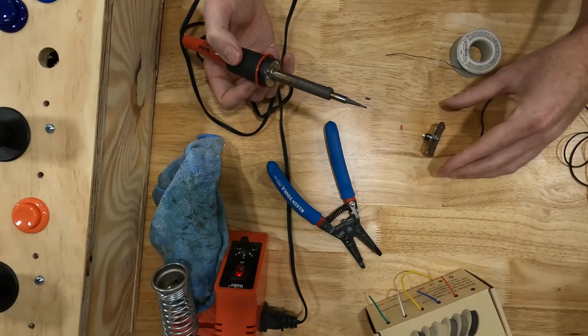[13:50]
All the way across that terminal. Just like that. Doesn't take long, it doesn't take much. And then I'm going to do the same thing to that second terminal that I marked, which is this side right here.
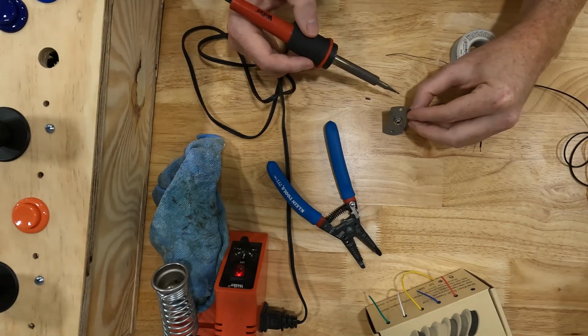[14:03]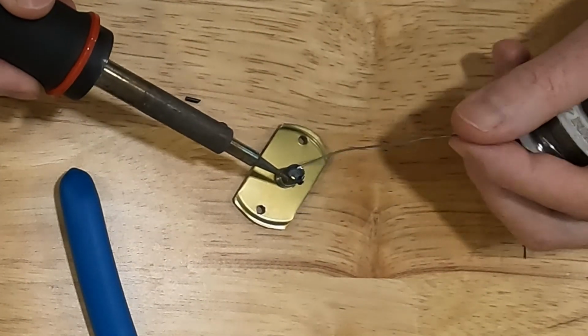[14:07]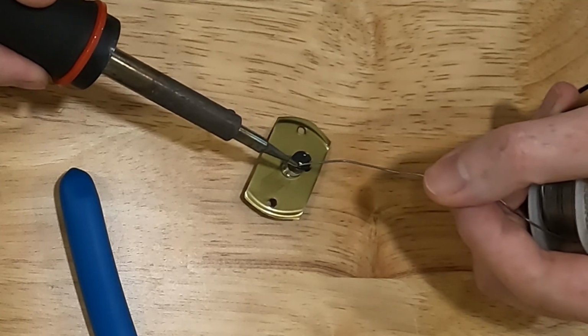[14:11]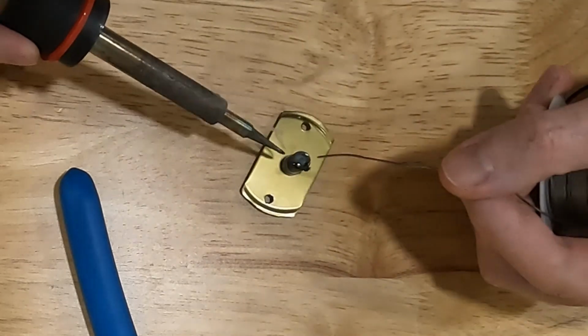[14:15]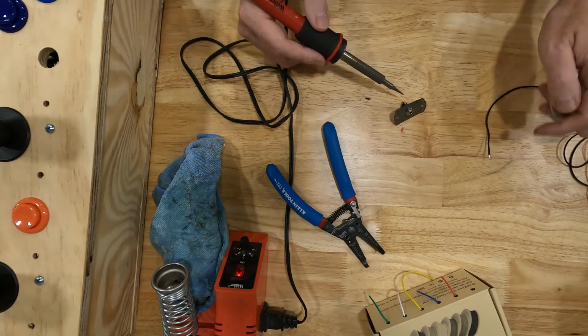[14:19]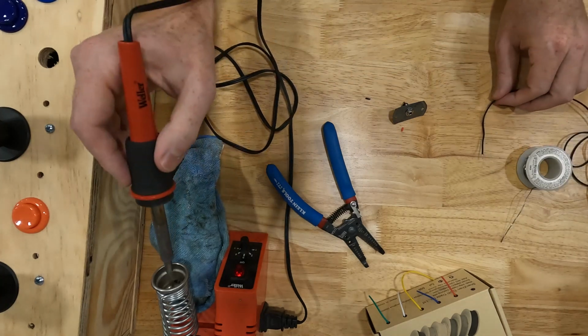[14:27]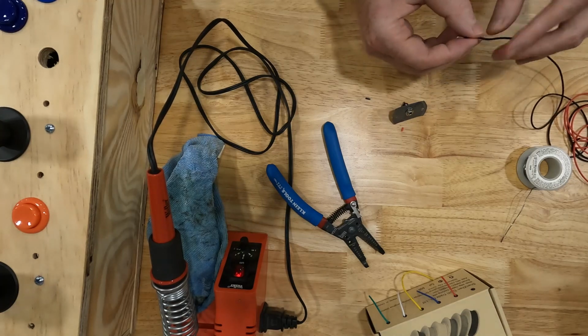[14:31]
Now it is difficult to hold everything and solder. I really need to clamp this down, but I'm going to try and do it without clamping it down. Okay. I didn't get this one very good, so I'm going to try it again. Okay. Then we're going to do the same thing on the wire.
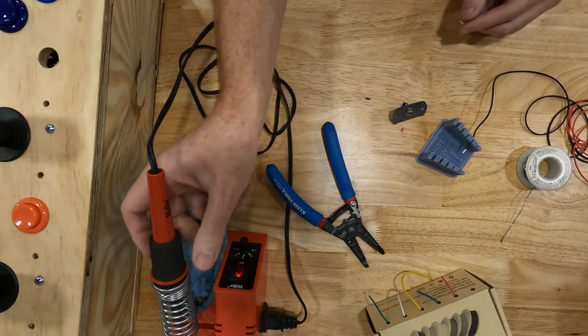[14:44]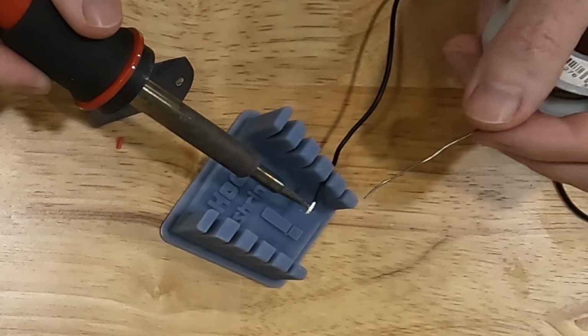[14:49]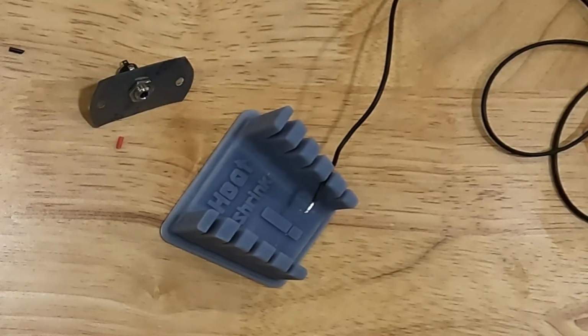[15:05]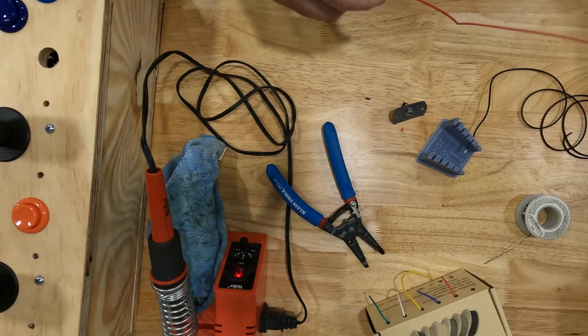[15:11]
So I have a little wire holder here that I'm going to use that I 3D printed just to hold the wire in place. You can also use tape. I often tape the wire down and then use the tape to hold it. So this time I'm going to put the soldering iron underneath the wire and I'm going to hold the solder above the wire. And what that's going to do is the solder is going to melt down through the wire. Just like that. So now the wire's been tinned, and I'm going to do the same thing with the red wire.
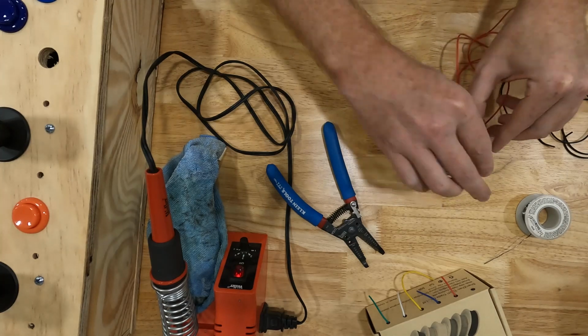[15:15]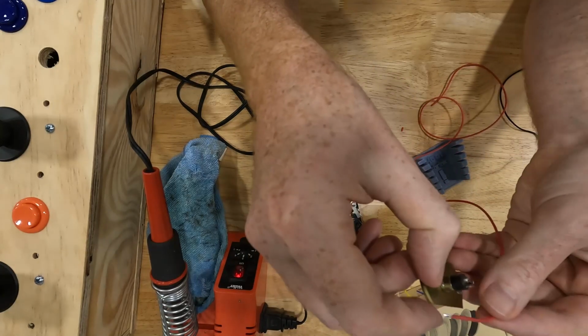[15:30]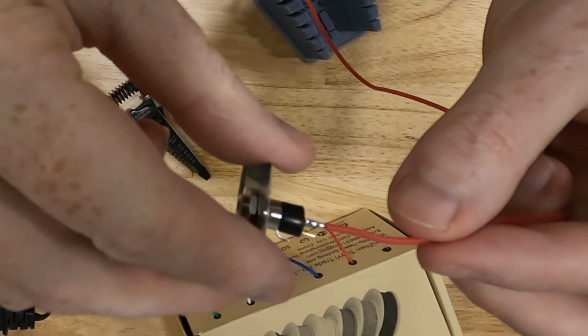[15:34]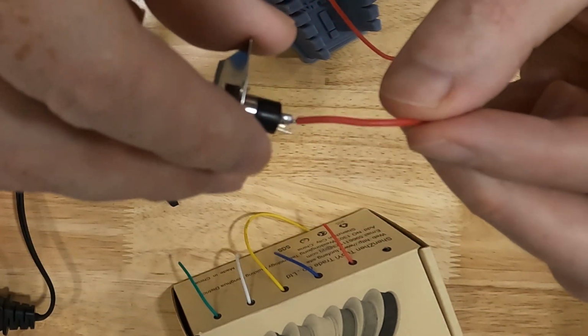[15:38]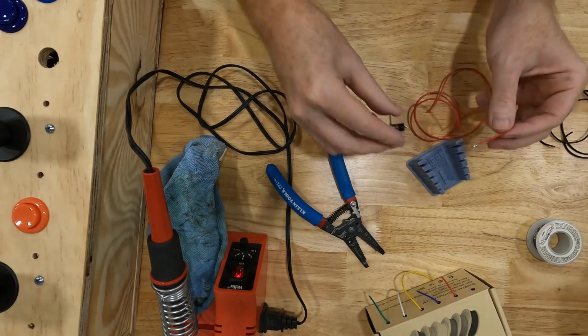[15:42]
Just like that. And then I'm going to take the two and I'm going to hold the red wire on one terminal, just like that. And I'm going to press on the top of that wire with the soldering iron. And that's going to melt the two solders together.
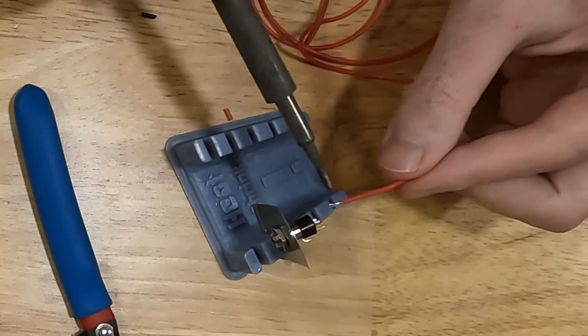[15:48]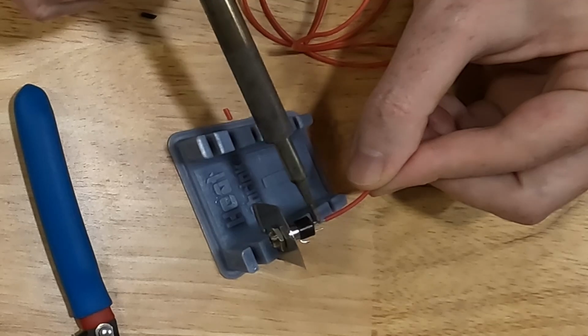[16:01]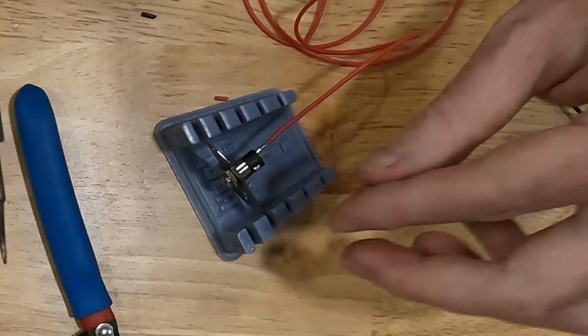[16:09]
So I'm just going to take the soldering iron here. I'm going to hold the wire on top of that terminal that we soldered earlier, and I'm just going to hold the soldering iron on top of the wire. That's going to heat up, transfer heat through both of those solder joints, and it's going to melt all of the solder together. I'll lift up on the soldering iron, let it cool, and there I have a soldered joint.
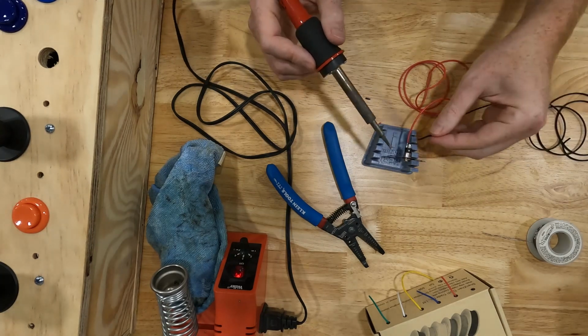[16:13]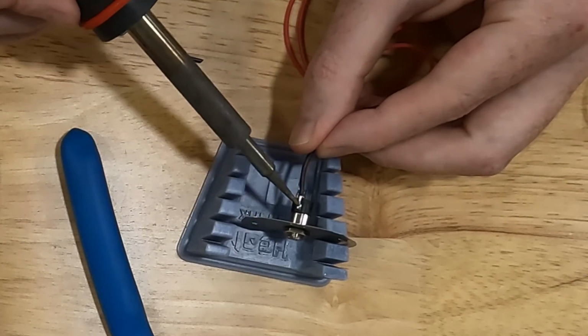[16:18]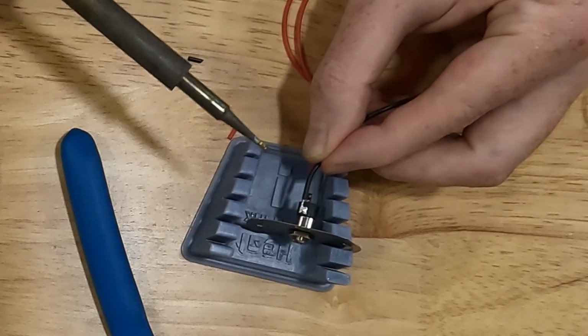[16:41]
I'm going to do the same thing with the ground connection. Hold the black wire to the top of that pre-soldered terminal, then take my soldering iron, press down on the black wire. Doesn't take a lot of pressure, just a little bit. The main thing is just melting both of those solder joints together. Lift up, let it cool, and there you have a soldered connection.
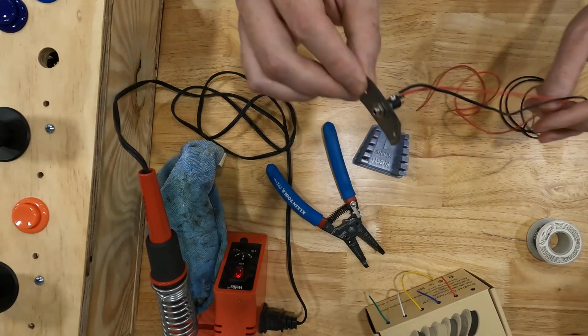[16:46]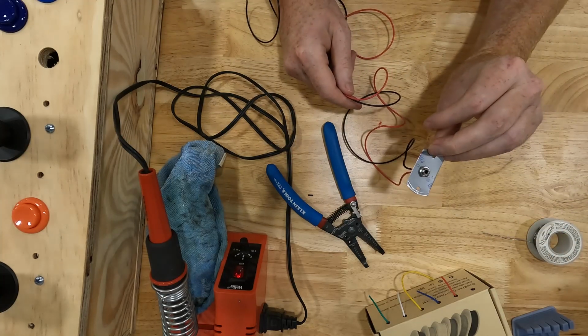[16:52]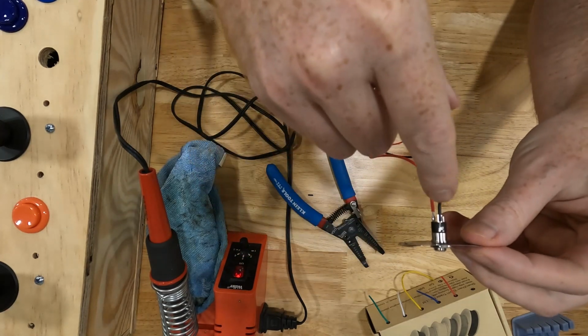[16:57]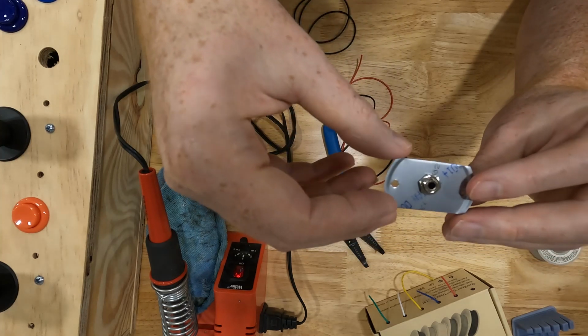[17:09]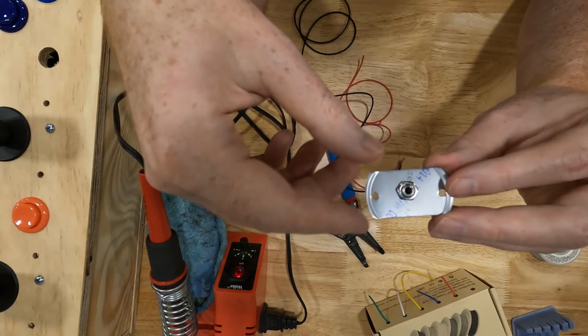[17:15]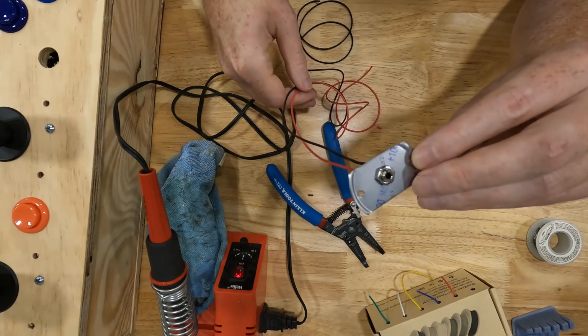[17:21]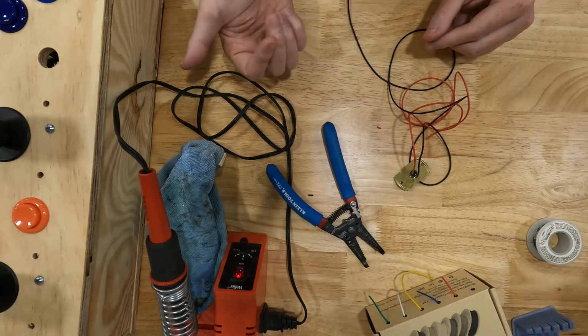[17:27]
So now we've got our audio jack wired up. Now we can install it in our box. Now if you're not comfortable with soldering, I know soldering scares a lot of people. They make solderless 3.5mm jacks, and I'll put those in the description as well. I don't actually have any, so I can't verify that it will work the way we're mounting it here. But I'll send you a link so you can try those if that makes you feel more comfortable. Let me get some of this stuff out of the way and then we'll install this into our box.
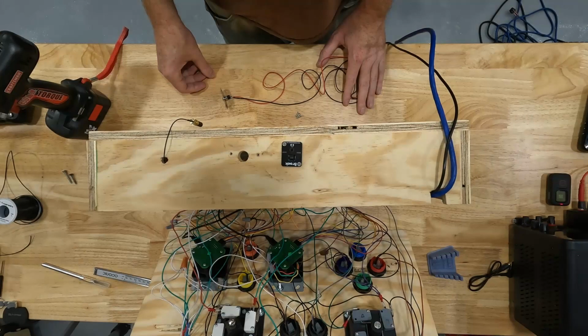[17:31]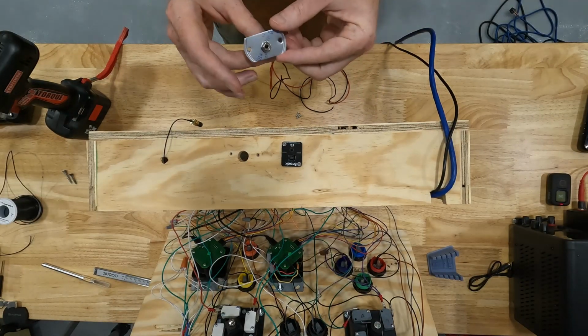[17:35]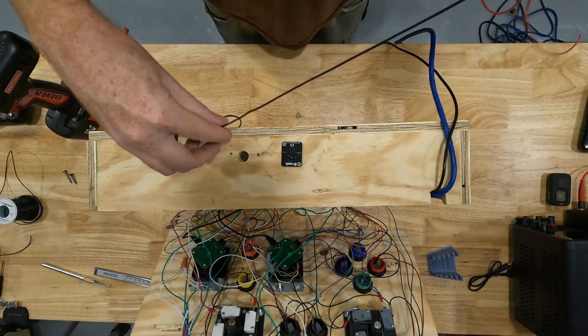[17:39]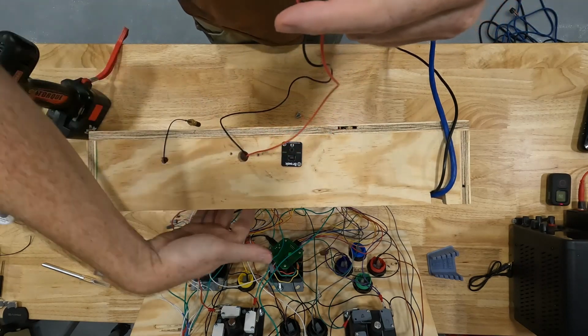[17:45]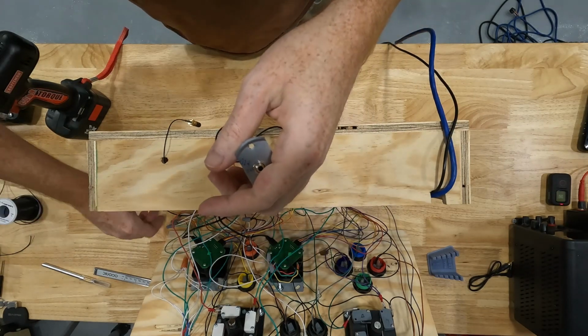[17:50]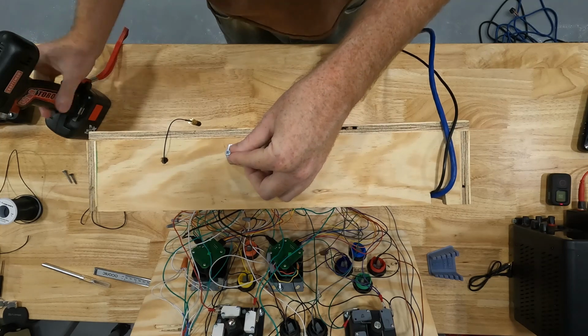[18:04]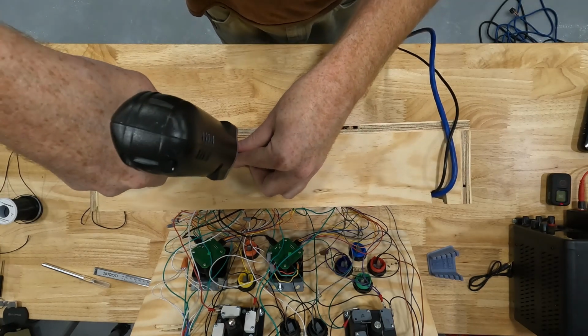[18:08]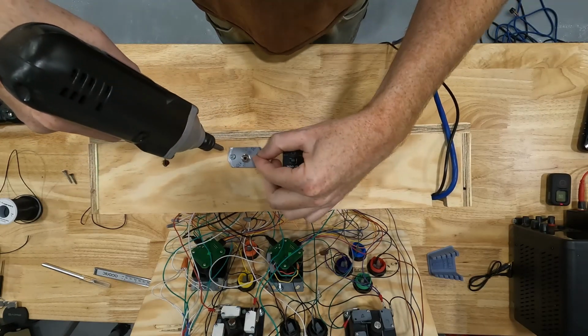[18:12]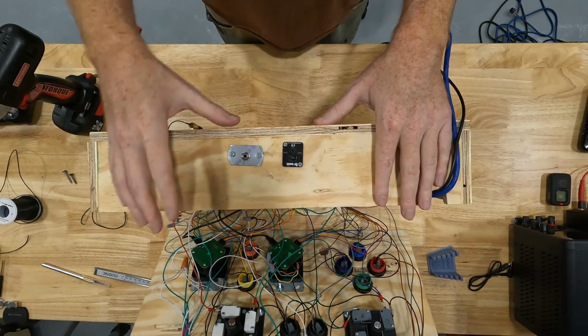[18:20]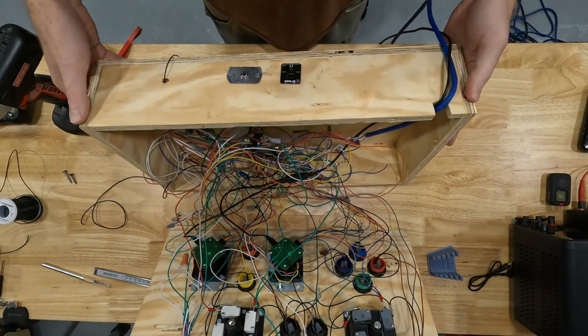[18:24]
Now we're ready to install our homemade flange into our box. So we've got our hole already made. We're just going to feed the two wires in our box, and we're going to pull them through from the back side. And then we're just going to put a couple screws to hold our flange in place. Just like that. So now that's a really strong connection, and you can plug and unplug out of that jack all you want.
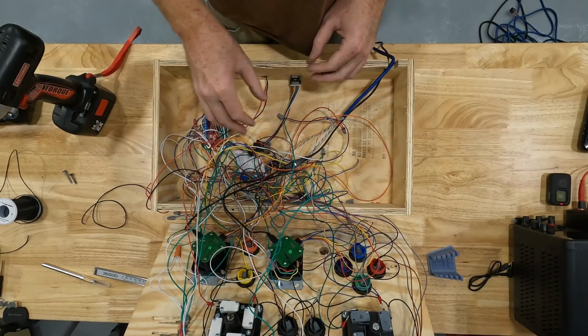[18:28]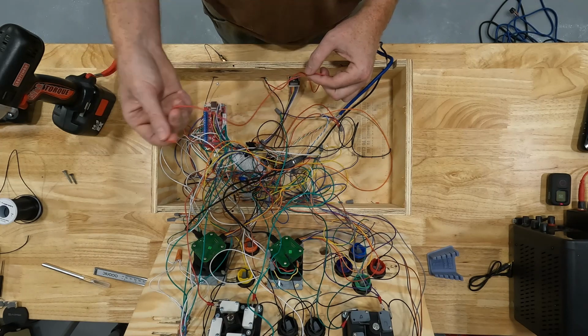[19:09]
Now I forgot how messy this is, but let's just pretend that you don't see this and focus on these two wires. So then of course, in our setup here, we're using the Brook wireless fighting board. So whatever button you want this 3.5mm jack to control, you would wire it up to the Brook wireless fighting board. So the black wire we wired up to ground, so you would wire that up to a ground connection on either the board or tie it into an existing connection on some of your other buttons. And then the signal wire, which we have as the red wire, you would plug into whatever button you want to use. So if you wanted the X button, for example, on a PlayStation controller, you would just wire this into the X connection on the wireless fighting board.
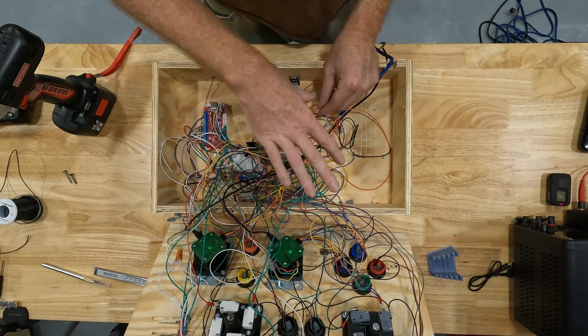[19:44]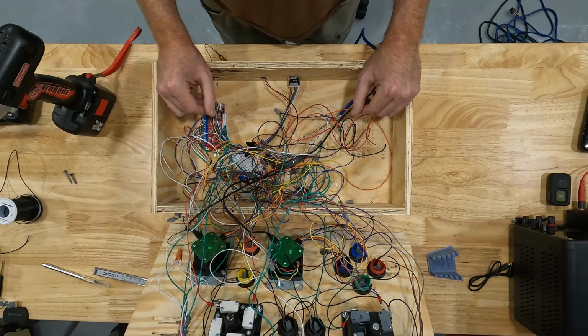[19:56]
Or if you wanted the option of using the 3.5mm plug or one of the already existing arcade buttons that we have in here, you could tie it in to that button signal. So you just cut the wire, splice it in so both of those are connected. If you want more details on that, check out some of my other videos where I go into full detail on how to install these buttons and how to make multiple buttons do the same thing. That's exactly what we would do here. It makes no difference. This is as far as I'm going to take the wiring on this one. I just wanted to show you the option of using the 3.5mm jack inside of our box.